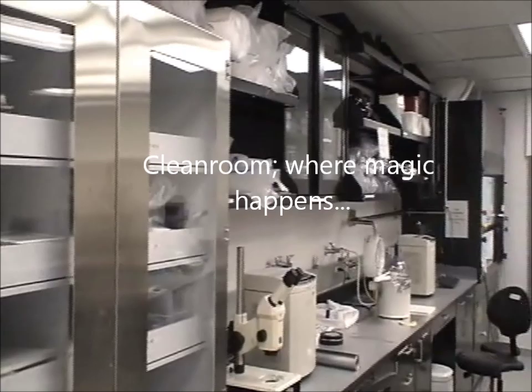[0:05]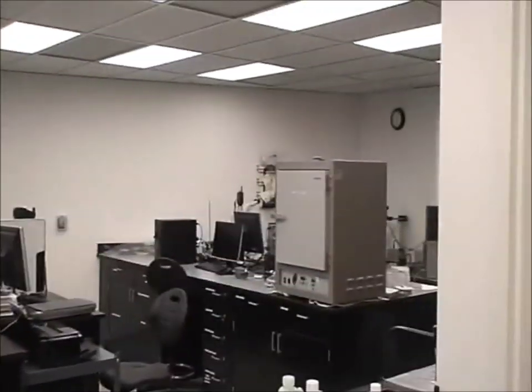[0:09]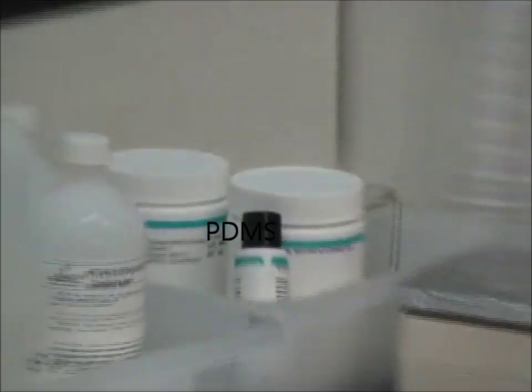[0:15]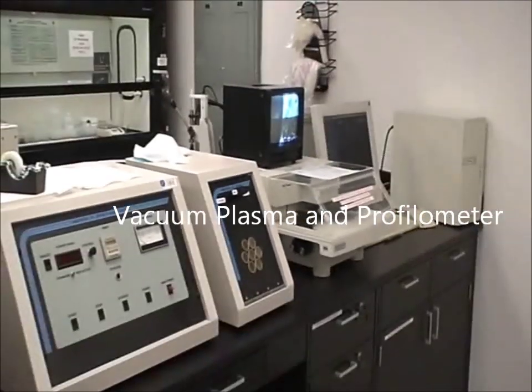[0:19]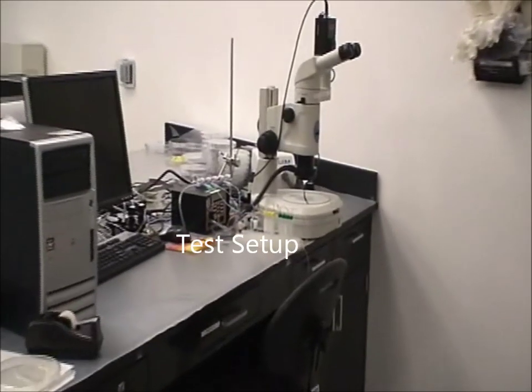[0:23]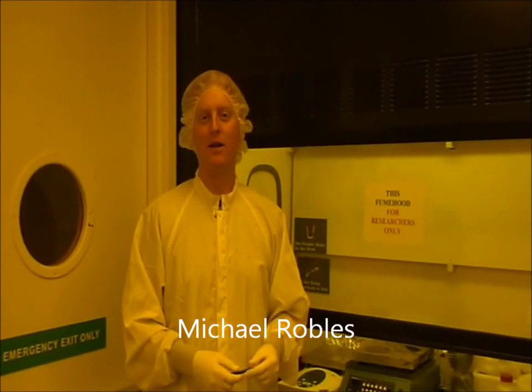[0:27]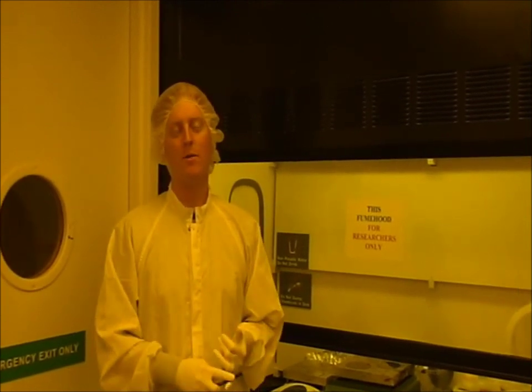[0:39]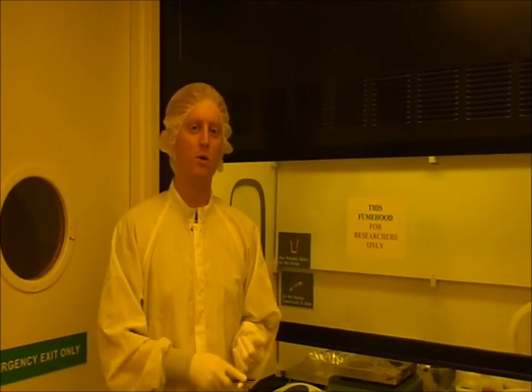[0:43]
using multi-layer soft lithography. The rotary pump chip is one of our simplest devices. The first step in multi-layer soft lithography is mold making. Since the rotary pump chip is a multi-layer device, it requires two molds: one mold for the control layer and one mold for the flow layer.
The control mold is made using negative resist, which has a rectangular cross-section, and the flow mold is made using positive resist, which has a rounded cross-section after reflow. This rounded cross-section ensures complete sealing of the channels of the flow layer during operation of the microfluidic device.
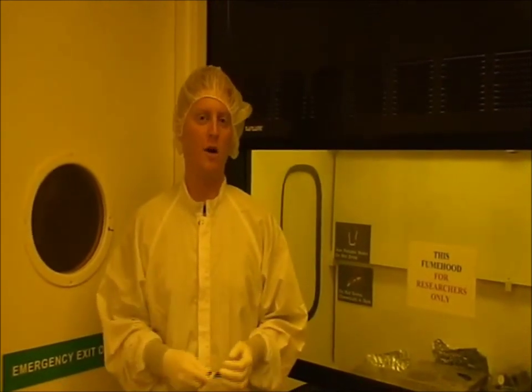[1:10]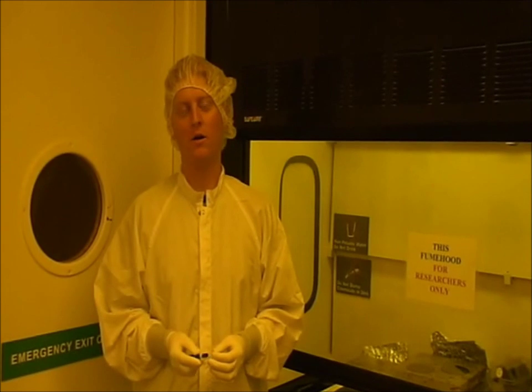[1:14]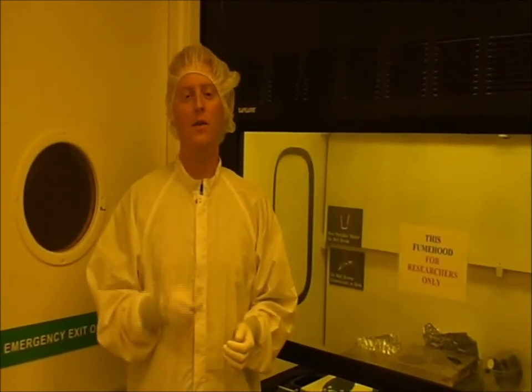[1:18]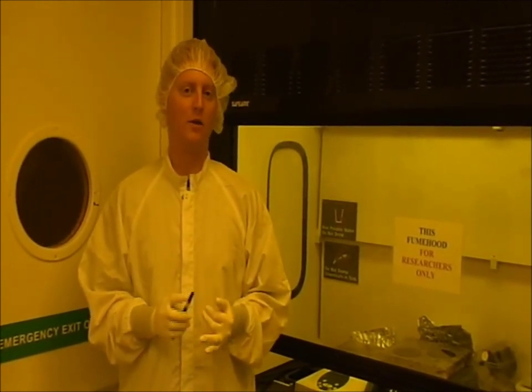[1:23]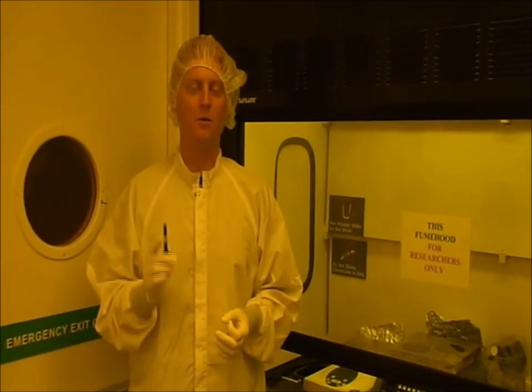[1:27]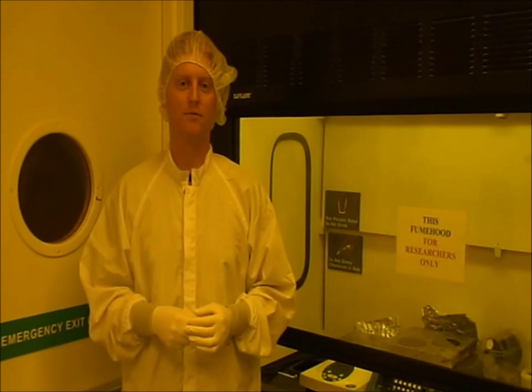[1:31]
The negative resist we typically use is SU8, which can achieve thicknesses of 5 to 150 microns. The positive resist we typically use is SPR, which can achieve thicknesses of 5 to 45 microns. This thickness is determined by the viscosity of the resist and also the spin speed and duration. The thickness of the resist on your mold determines the channel height of your microfluidic device.
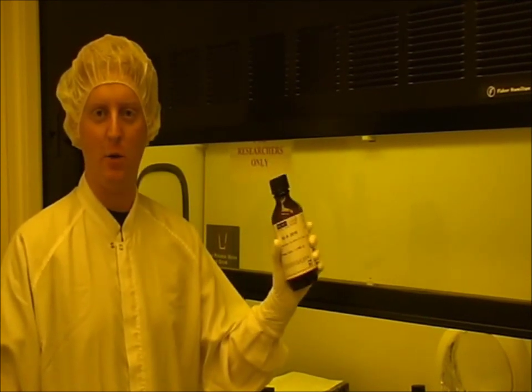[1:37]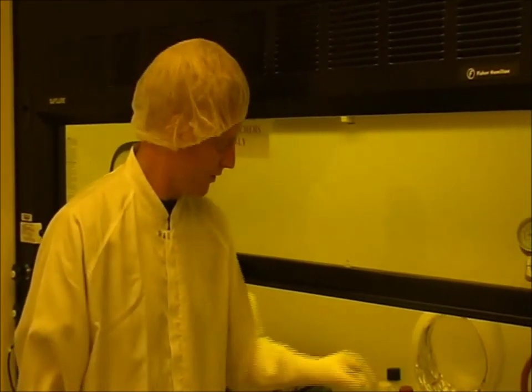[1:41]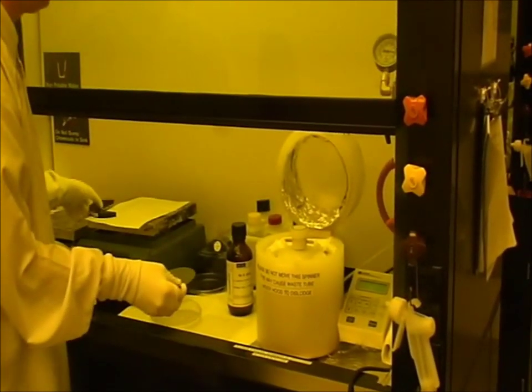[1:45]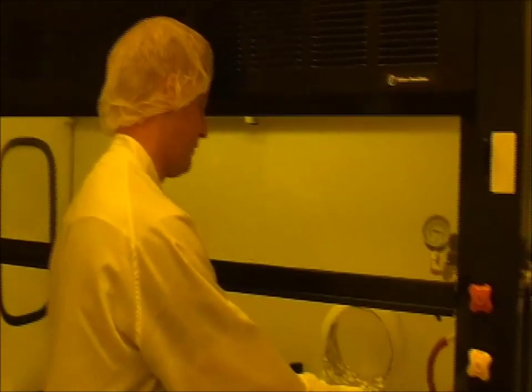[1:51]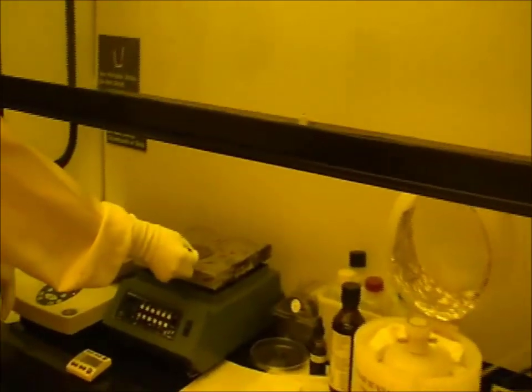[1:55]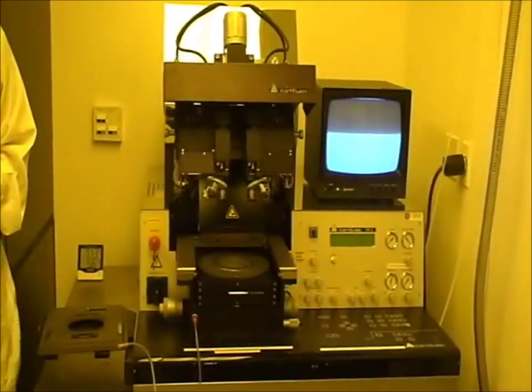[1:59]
At first, I'm going to be making the control mold. We use SU8, which is a negative photoresist. We spin the photoresist onto the wafer, as so. After the spinning is done, we take the wafer and soft bake it in two steps: one step at 65 degrees, and then at 95 degrees, and then we expose it.
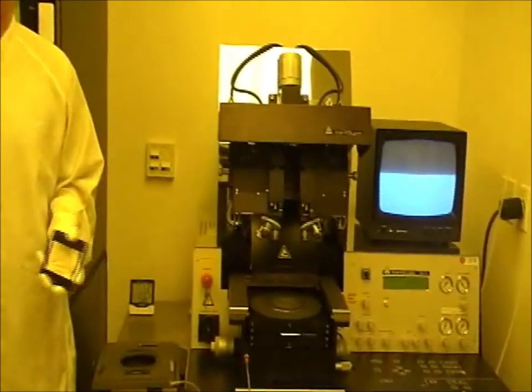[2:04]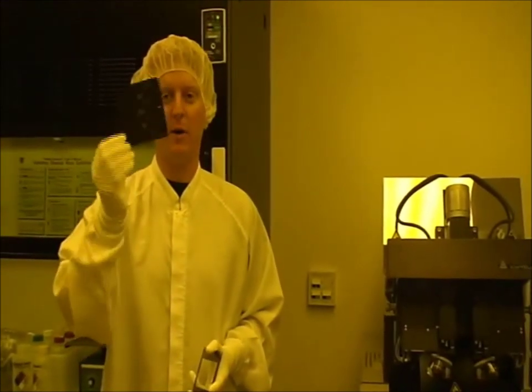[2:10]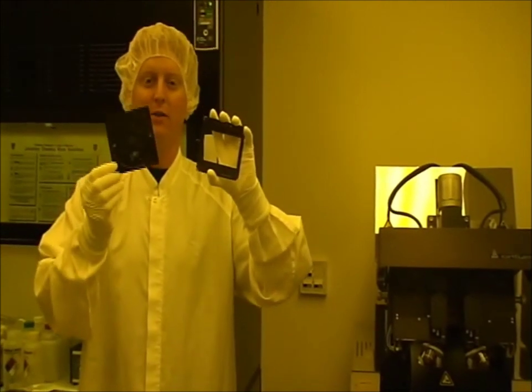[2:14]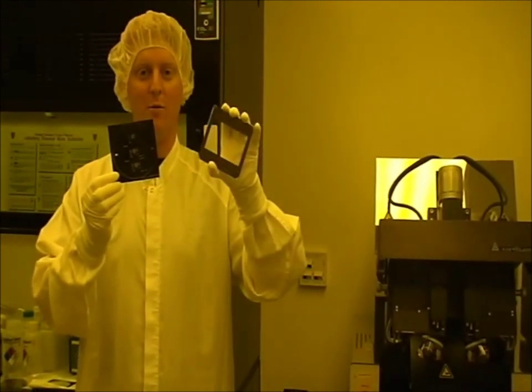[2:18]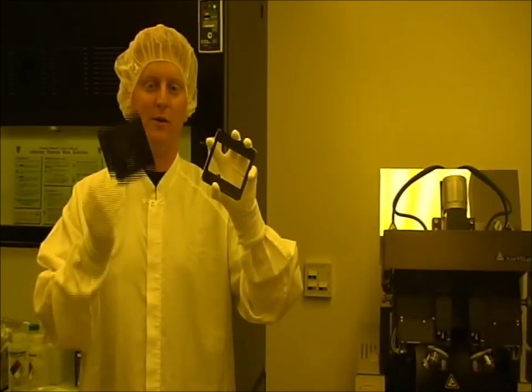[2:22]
We expose the wafer on a Carl Zeiss contact aligner. That shines UV light through a photomask onto the wafer. We use two different types of photomasks, one being a transparency mask, the other being a chrome mask. The transparency mask can achieve resolutions of approximately 10 microns. The chrome mask can achieve resolutions of below 1 micron, but is significantly more expensive than the transparency mask.
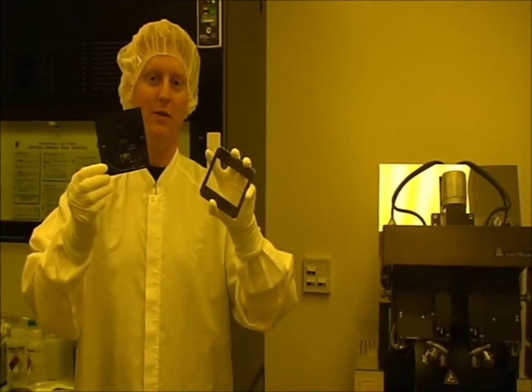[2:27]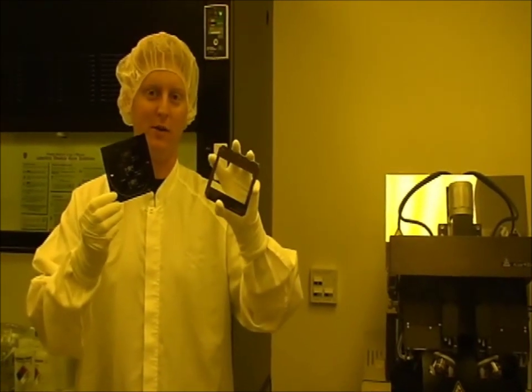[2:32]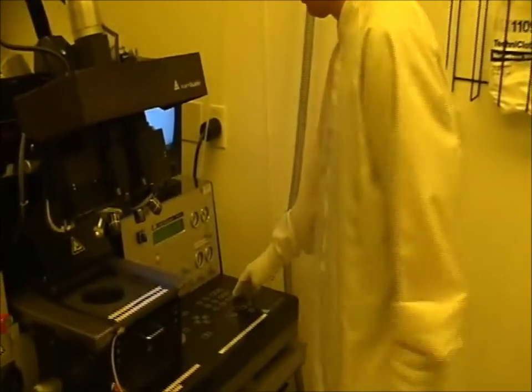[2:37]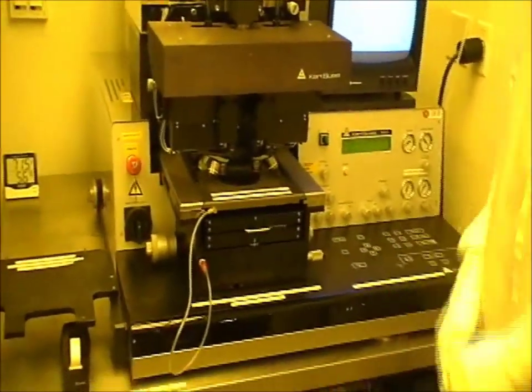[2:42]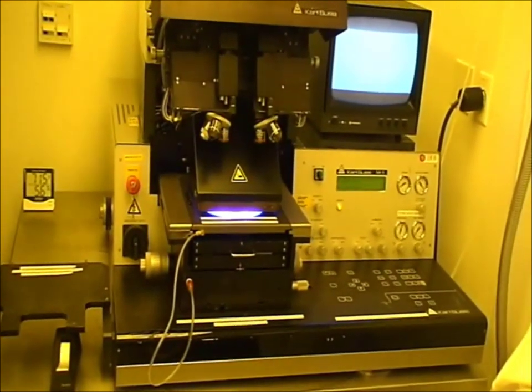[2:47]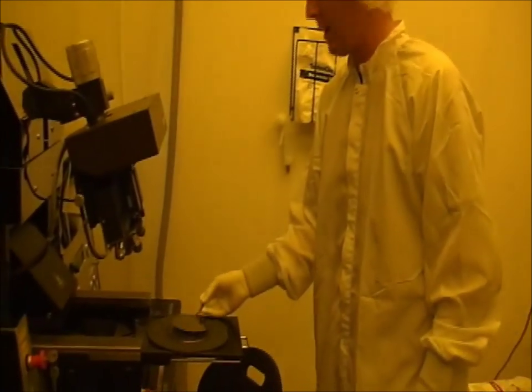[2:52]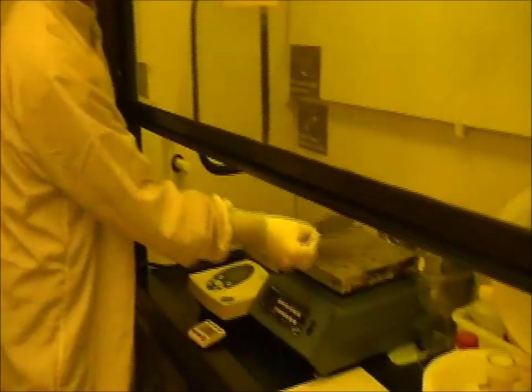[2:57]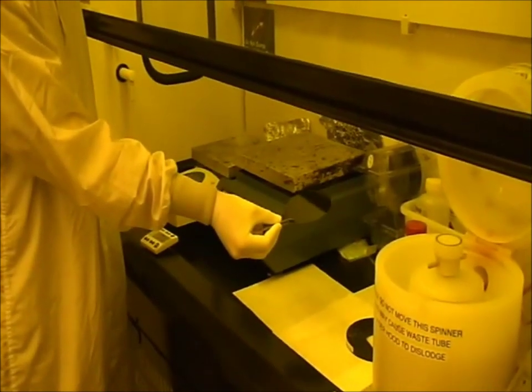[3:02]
This is a negative tone mask for use with negative resist. This is a positive tone mask for use with positive resist. After we load the mask, we load the wafer and expose it. After exposing the wafer, we do a two-step post-exposure bake: one step at 65 degrees, one step at 95 degrees, and then we let the wafer cool before we develop.
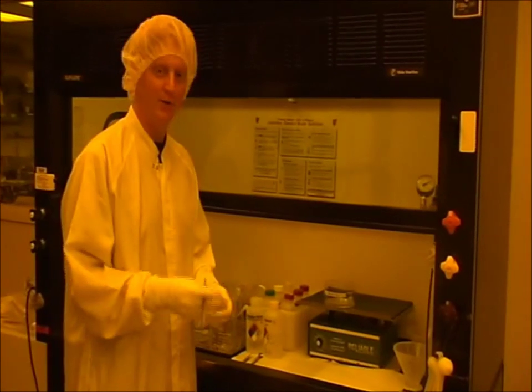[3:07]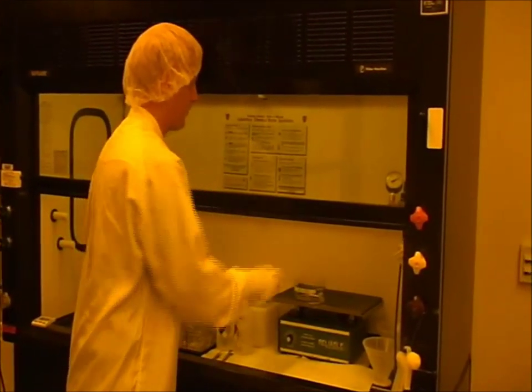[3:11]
After post-exposure bake, we develop the wafer. Since this is negative resist, the developer removes any non-exposed resist, transferring the pattern from the mask onto the wafer. As you can see, after developing, the pattern from the mask is transferred to the wafer. The wafer is now ready for hard baking.
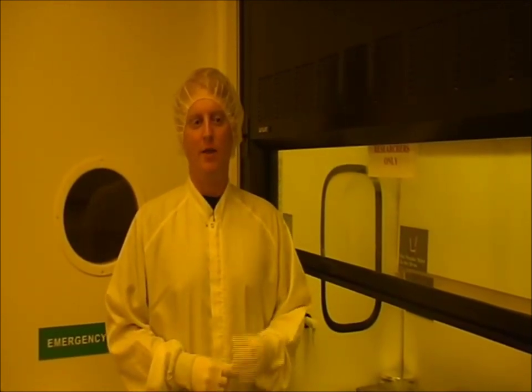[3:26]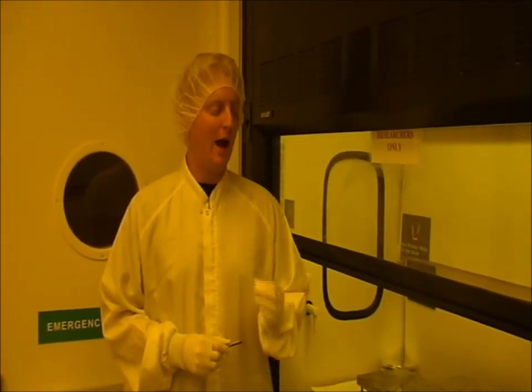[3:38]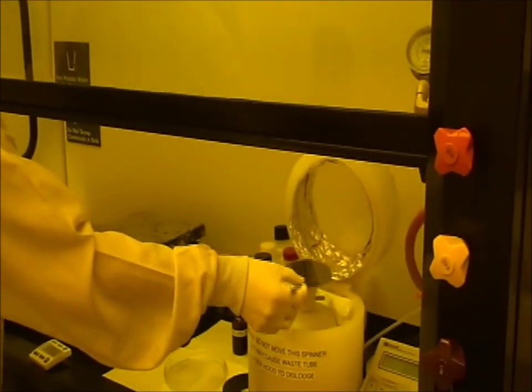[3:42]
For both the flow and control mold, we use 4-inch wafers. There are some differences in the steps for making the flow and the control mold. For the flow mold, before we coat the wafer, we expose it to an adhesion promoter called HMDS. After the adhesion promoter, we coat the wafer. After coating, we do a single step soft bake of the wafer.
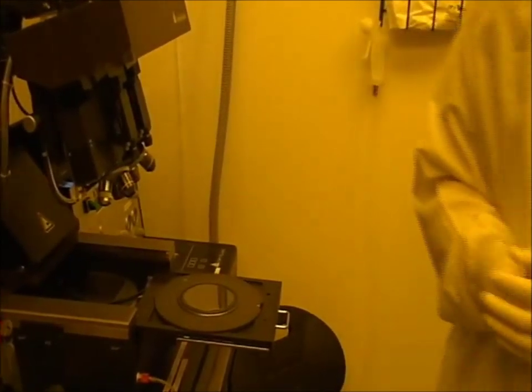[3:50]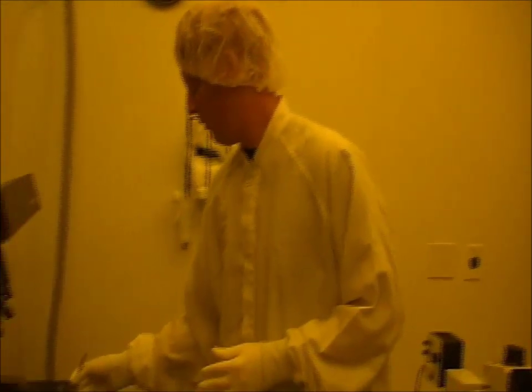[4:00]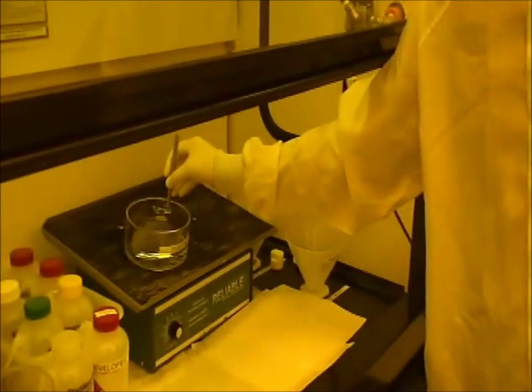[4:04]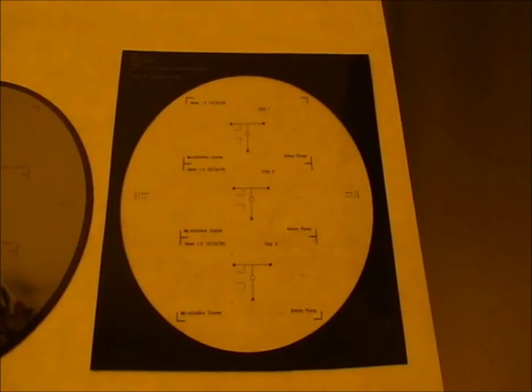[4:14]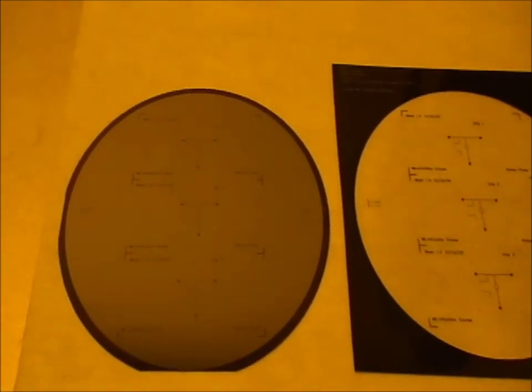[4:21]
After the soft bake, we expose the wafer. And since this is a flow mold, we use positive resist, and for positive resist, we use a positive tone mask. After the exposure, we immediately develop the wafer in positive developer. The positive developer removes any photoresist that has been exposed to UV light. As you can see, after development and cleaning, the pattern from the mask is transferred to the wafer. Now the wafer is ready for reflow and hard baking.
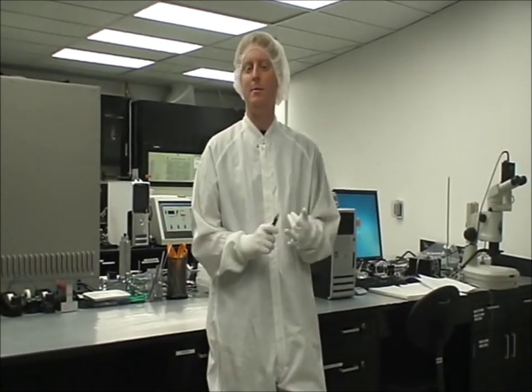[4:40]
Once the molds are hard-baked, we treat them with a silanizing agent. We use either TCS or TMCS. Treatment with the silanizing agent makes the PDMS not stick to the mold and makes it easy to work with. PDMS is a silicone elastomer that consists of two components, an A component and a B component. The manufacturer's recommendation for the mixing ratio is 1 to 10.
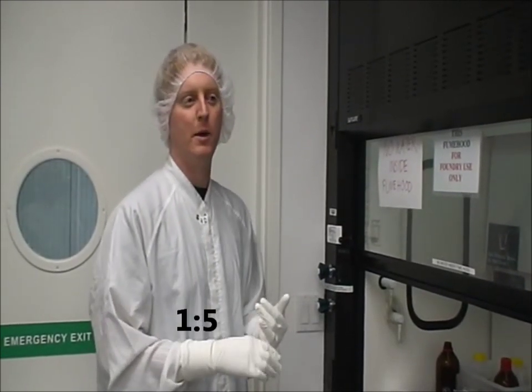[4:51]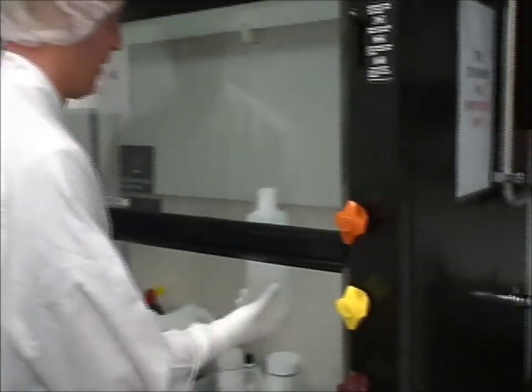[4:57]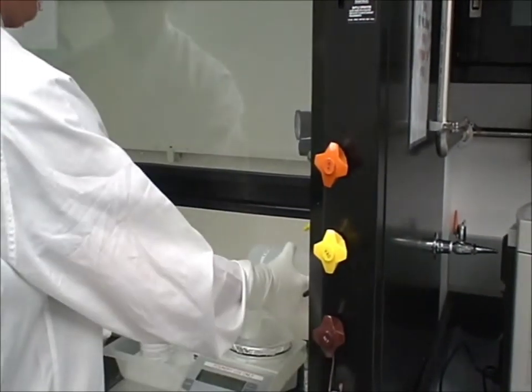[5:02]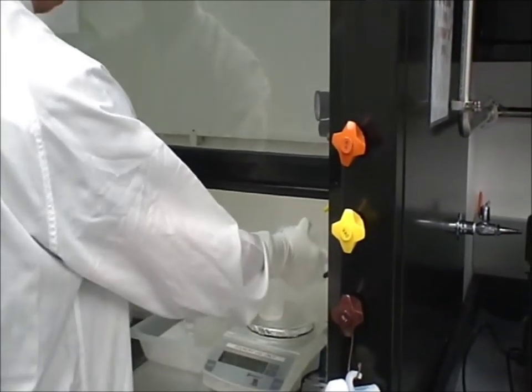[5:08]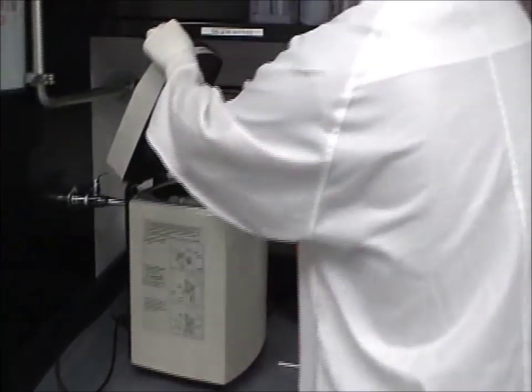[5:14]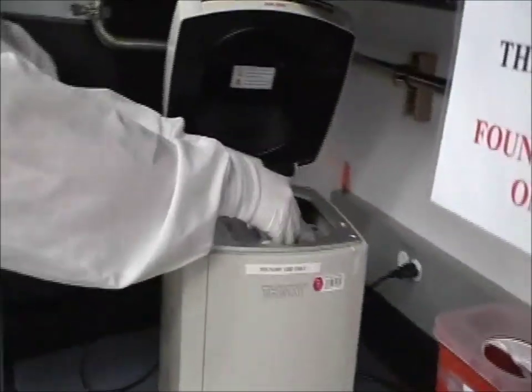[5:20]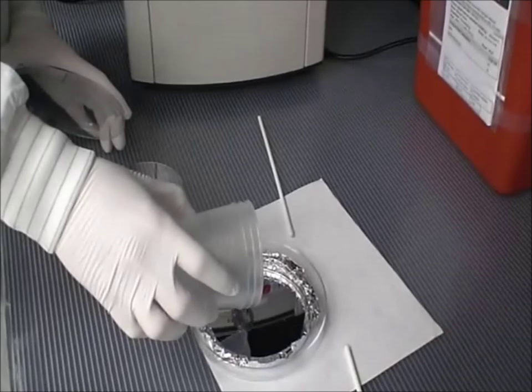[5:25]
First, we'll be making the PDMS for the control layer of the rotary pump. We'll be mixing a 5-to-1 ratio of PDMS. So we have our two components, the A and the B. So we take the mixed PDMS and pour it on our wafer. In this case, this is our control wafer.
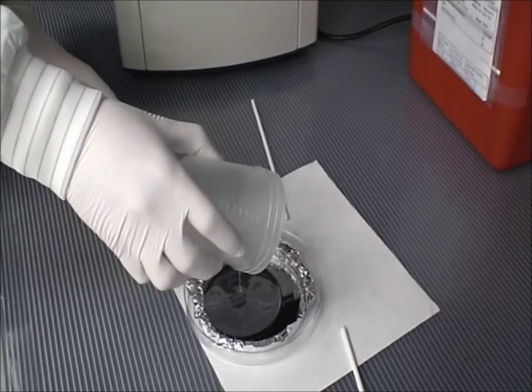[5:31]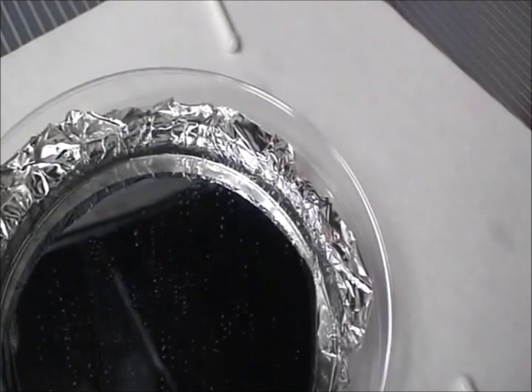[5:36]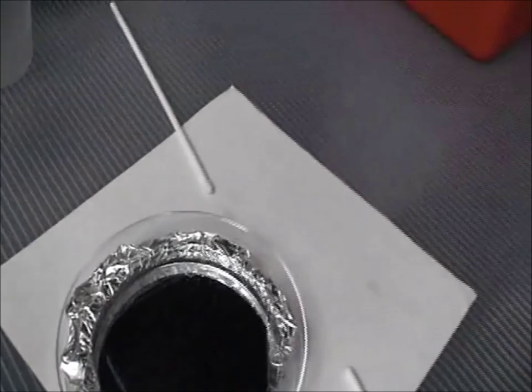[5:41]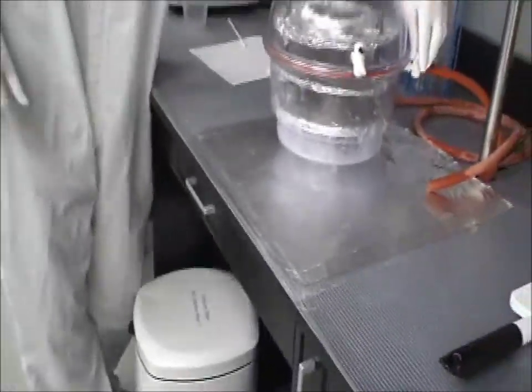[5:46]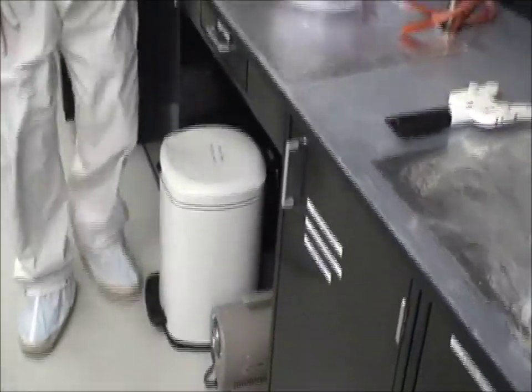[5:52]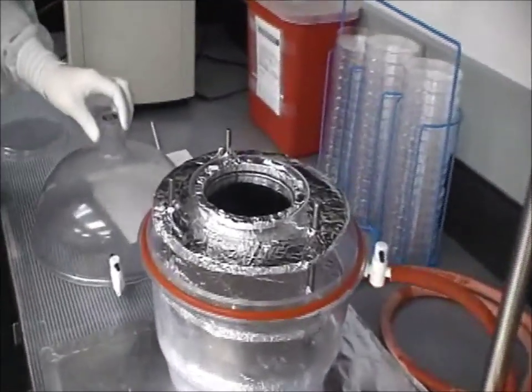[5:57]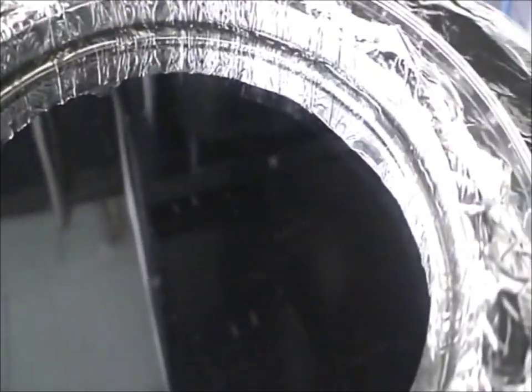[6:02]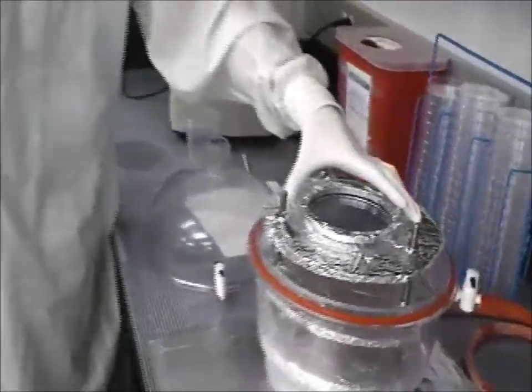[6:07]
As you can see, there are plenty of bubbles in the PDMS. If we were to make the chip right now, the chip would be useless, full of bubbles. So the next step is we degas. The degassing takes about half an hour. Once the bubbles are removed, we bake this layer for about an hour to partially cure it, so then we can thermally bond it to the thin layer.
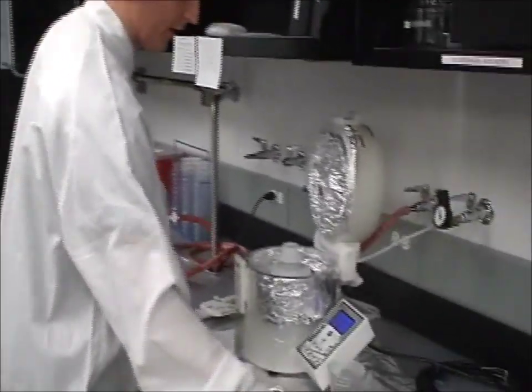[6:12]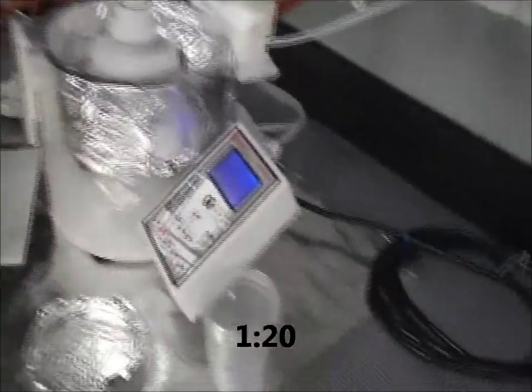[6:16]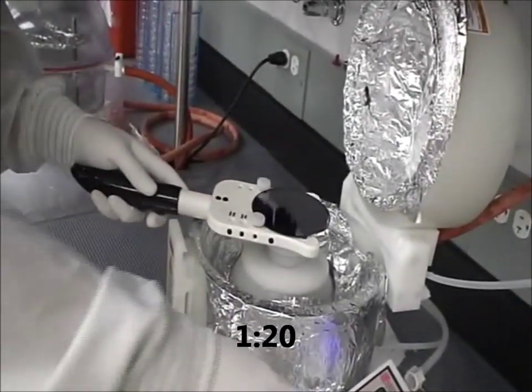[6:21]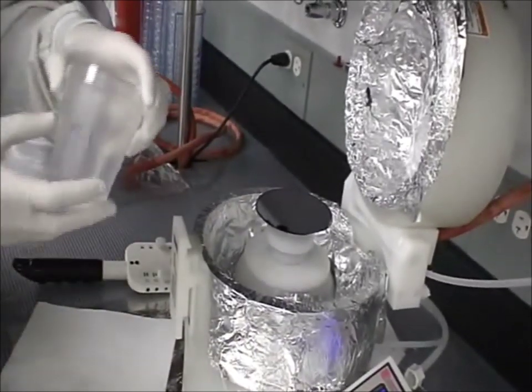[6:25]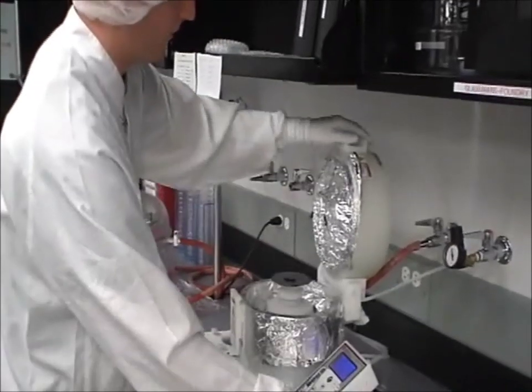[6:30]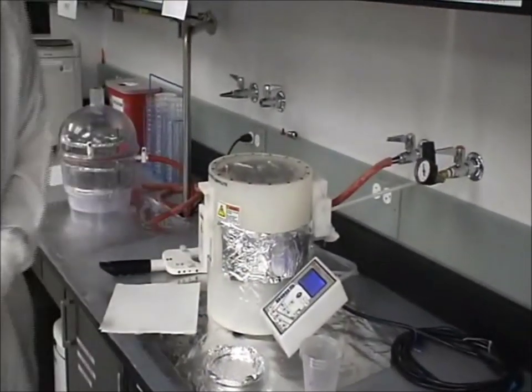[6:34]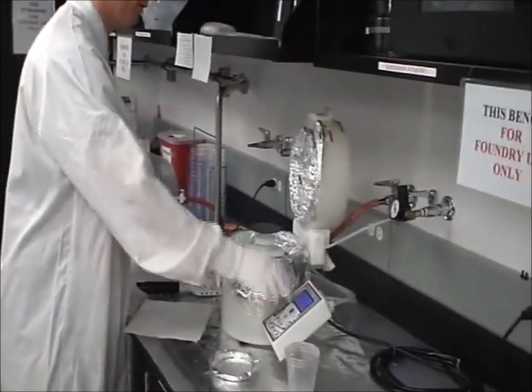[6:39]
For the flow layer for the rotary pump, we do a thin layer of PDMS, and that's of 20:1 ratio. And this is a similar spin coater that we used for the photoresist. And then we spin it. Once the spinning is done, we remove the wafer and bake it for approximately 40 minutes.
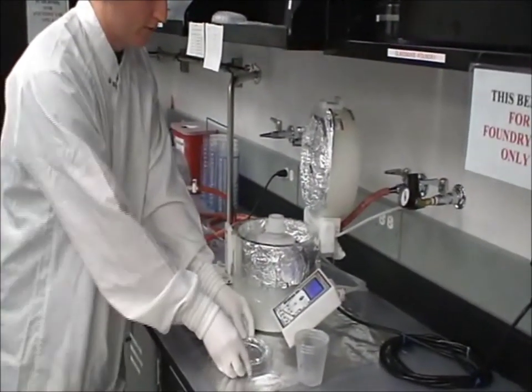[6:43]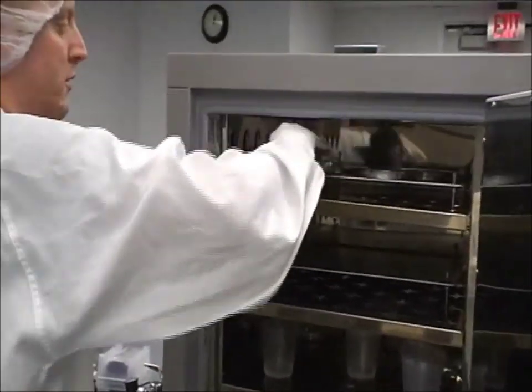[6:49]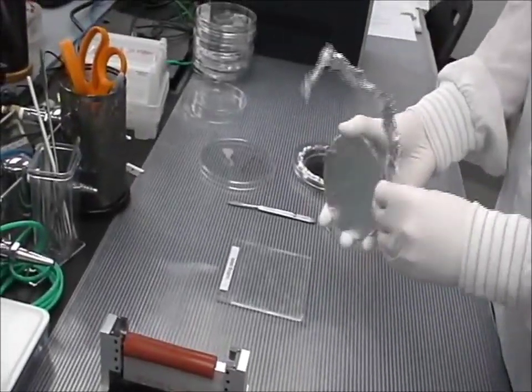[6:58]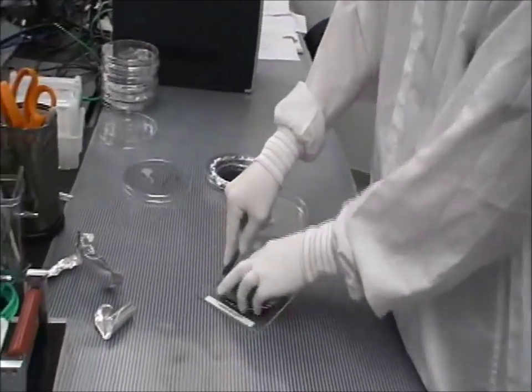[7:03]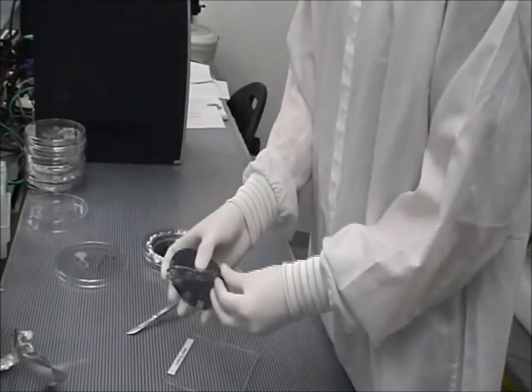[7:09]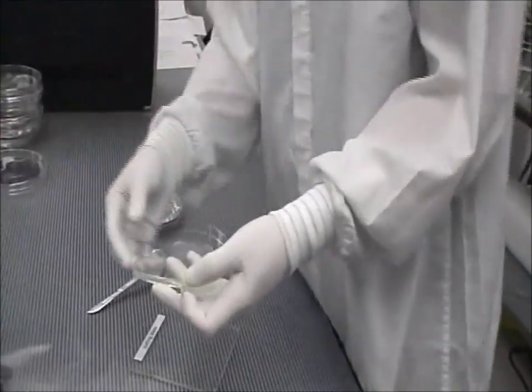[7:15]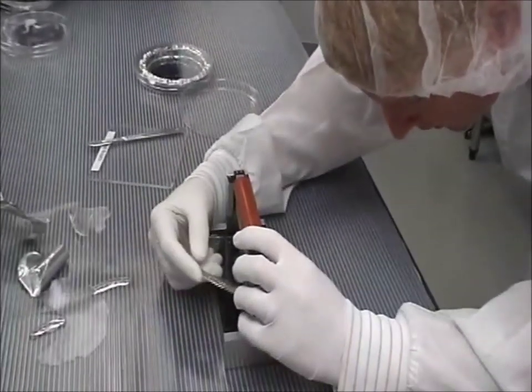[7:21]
Once the baking is done, we remove our two wafers, and then we cut them out. Peel it away from the mold. Then we individually cut out each chip.
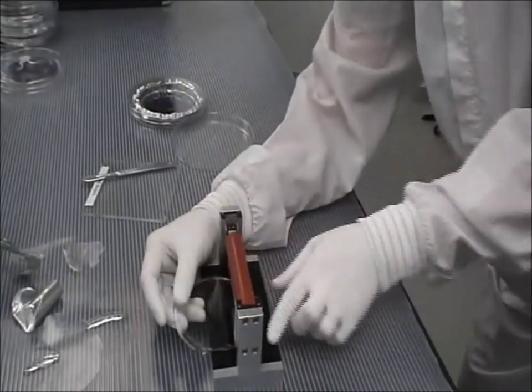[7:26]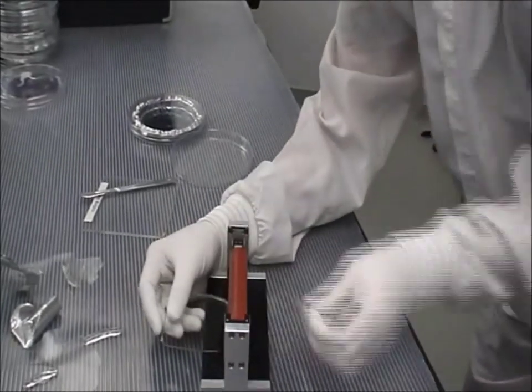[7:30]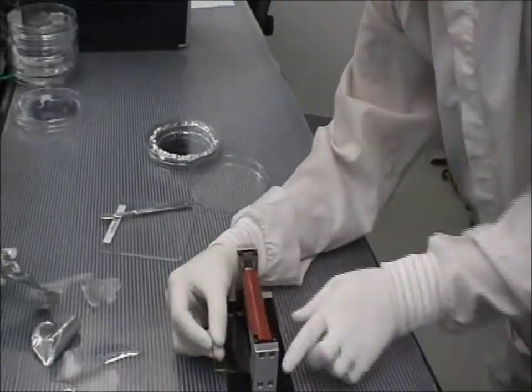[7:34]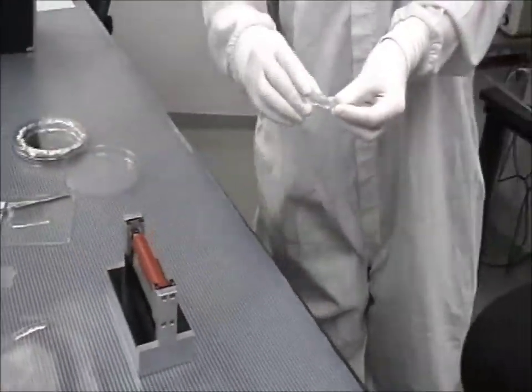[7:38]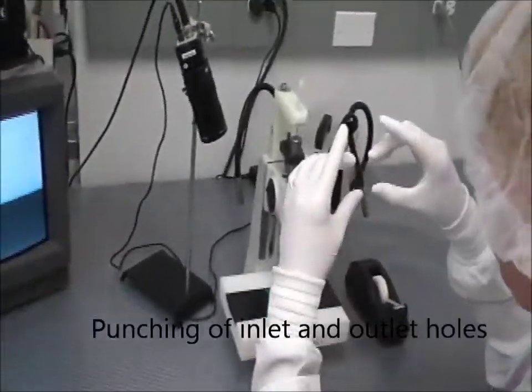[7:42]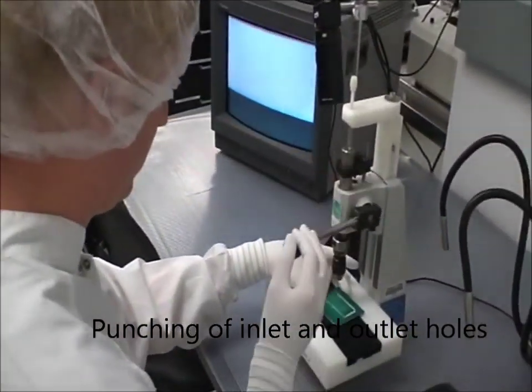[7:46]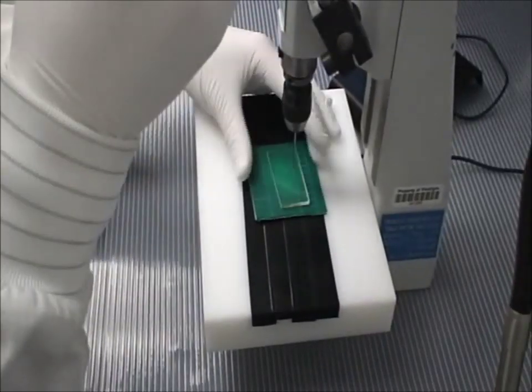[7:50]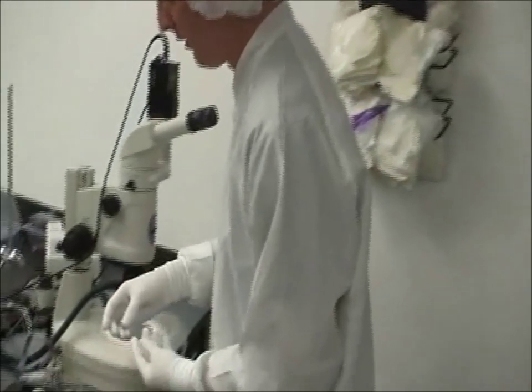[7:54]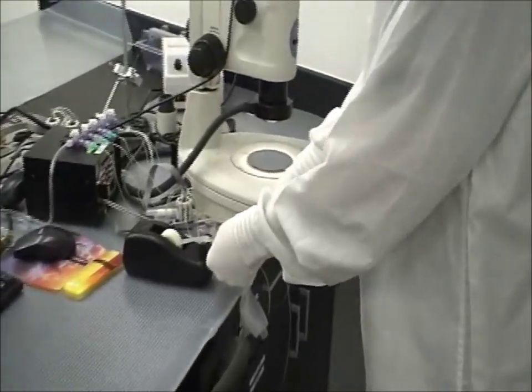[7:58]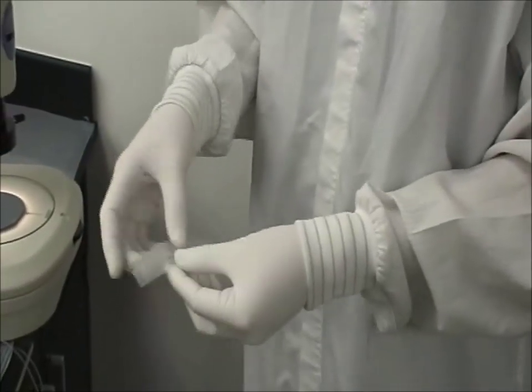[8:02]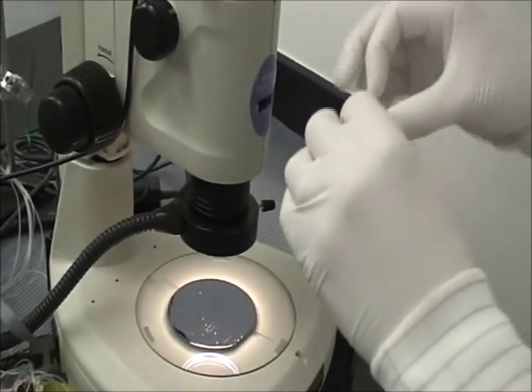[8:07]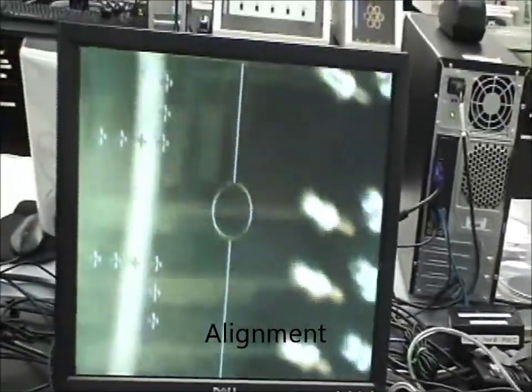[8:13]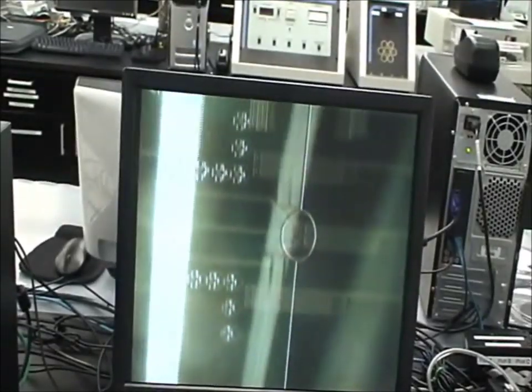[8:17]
Once the holes have been punched, we clean the wafer. To do that, we use masking tape. Masking tape is great for removing any small particles of PDMS, any dust that may have gotten on the wafer. You place your thick layer on top of your thin layer. Try and line up your alignment marks.
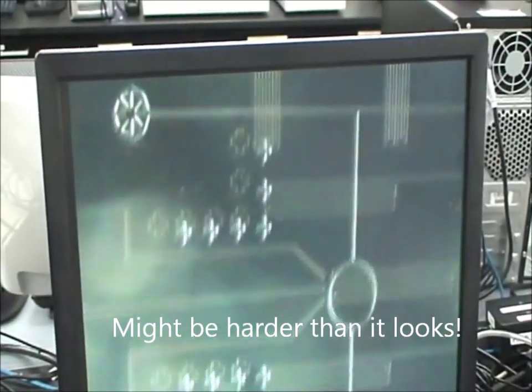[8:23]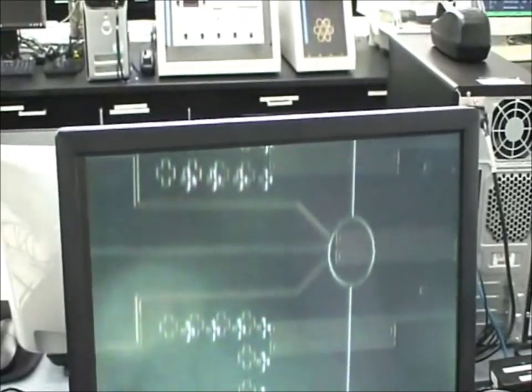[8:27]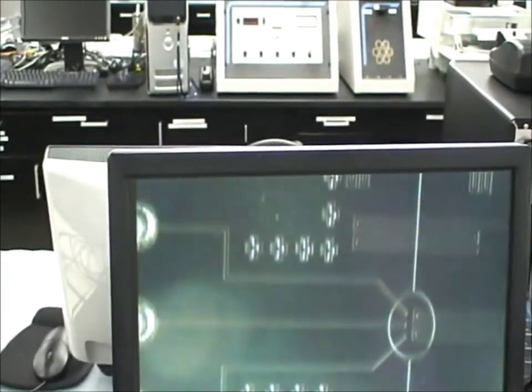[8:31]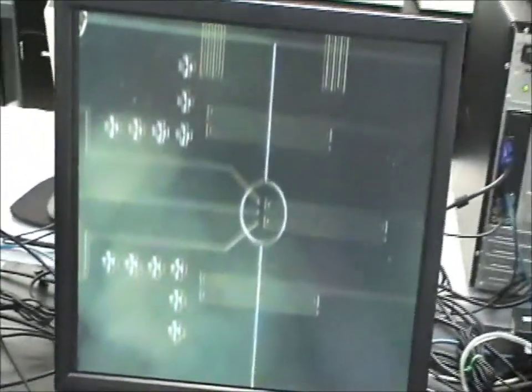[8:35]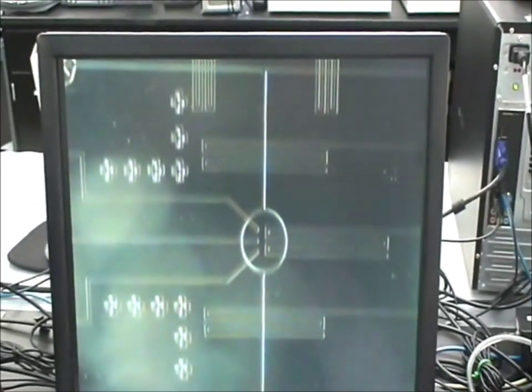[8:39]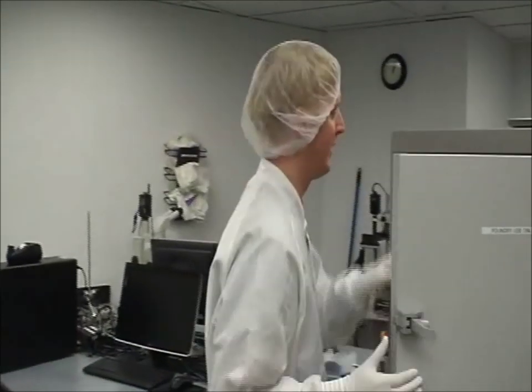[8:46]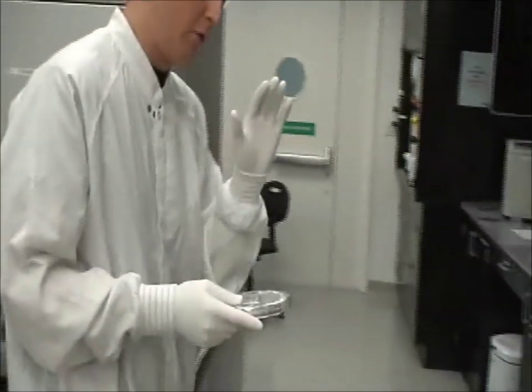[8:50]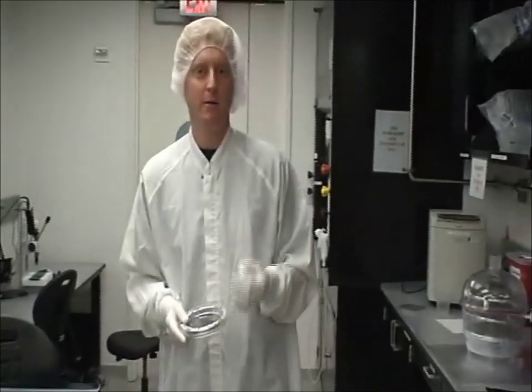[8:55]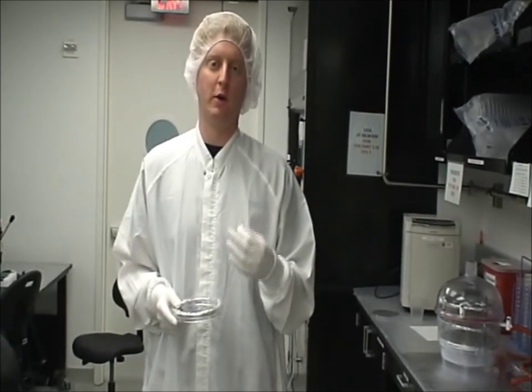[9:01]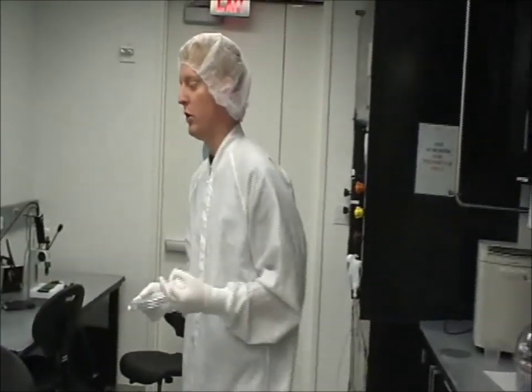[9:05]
After we are aligned, we then bake the chip at 80 degrees for another hour. After incubating for an hour, we take the chip out. At this point, the two layers should be bonded together because of the thermal bonding from the two different ratios. The crosslinker in the 5:1 ratio is diffusing over the interface between the two layers into the 20:1 ratio. So we should have a single piece of PDMS.
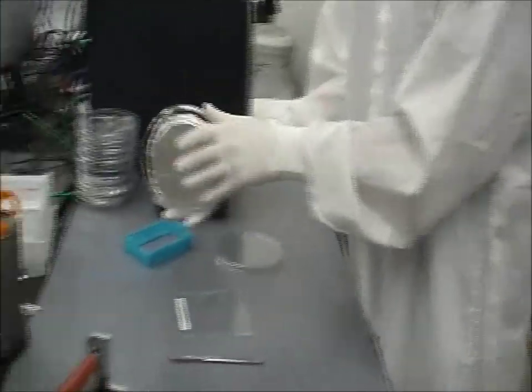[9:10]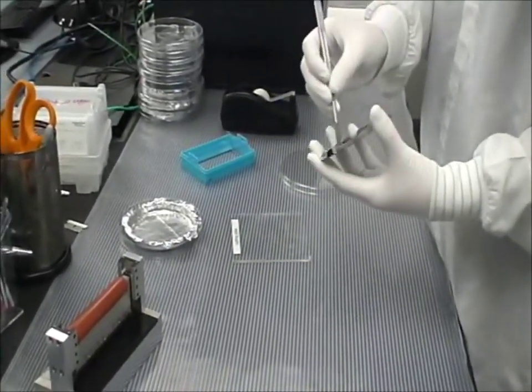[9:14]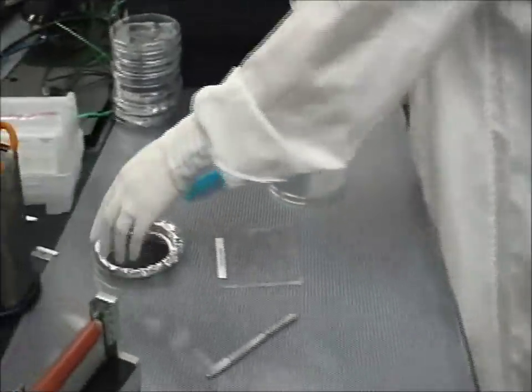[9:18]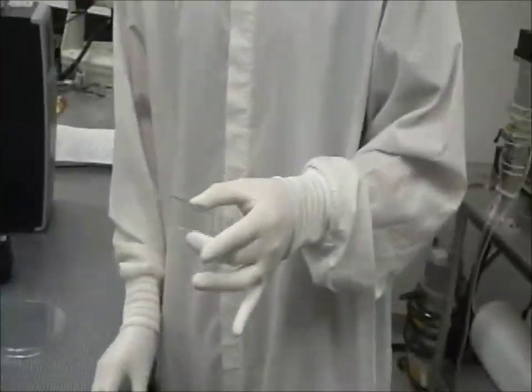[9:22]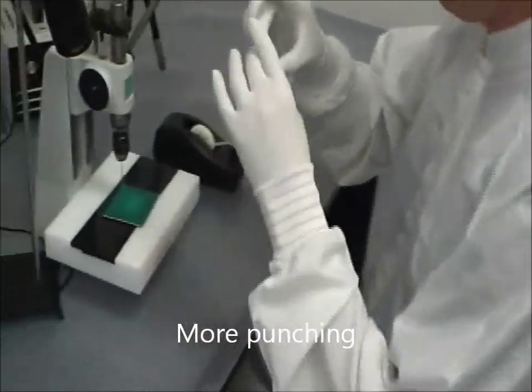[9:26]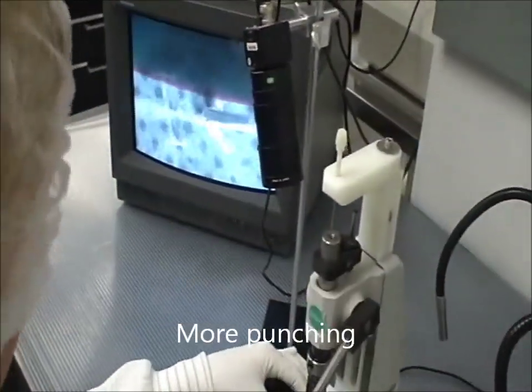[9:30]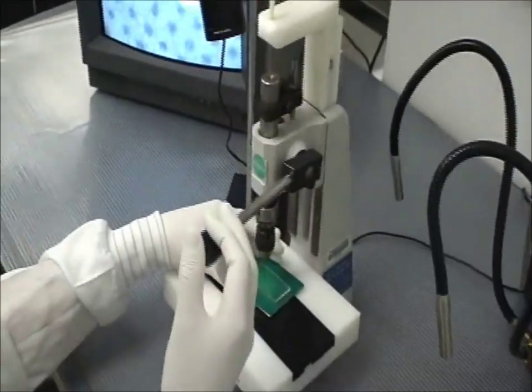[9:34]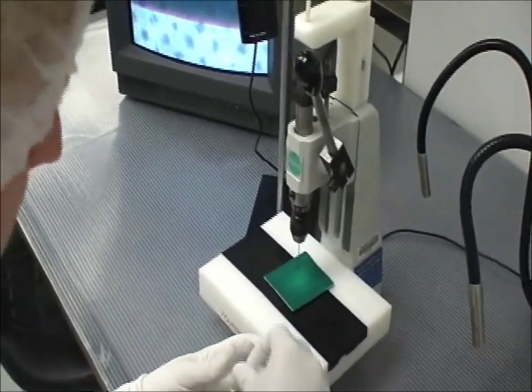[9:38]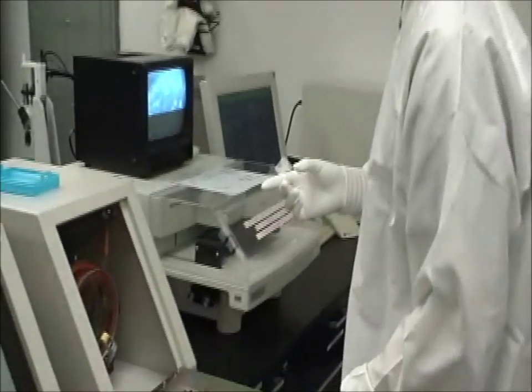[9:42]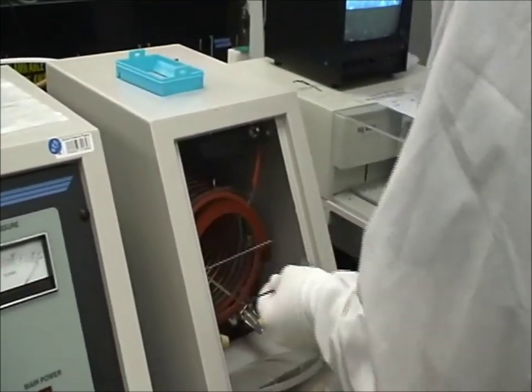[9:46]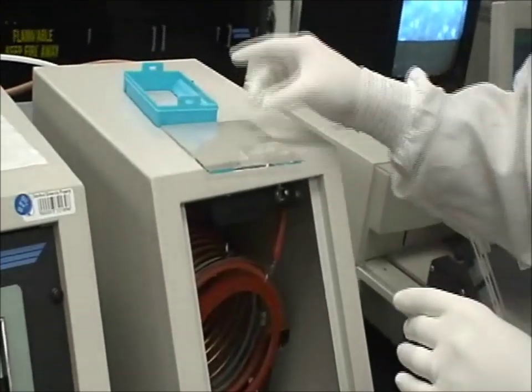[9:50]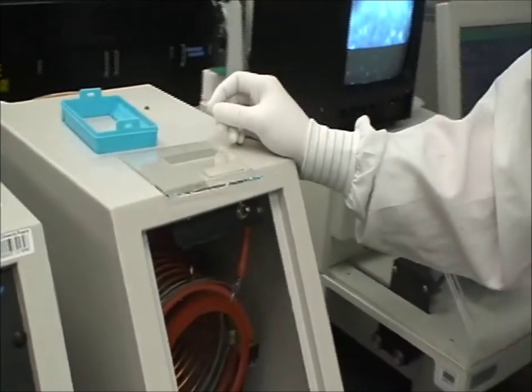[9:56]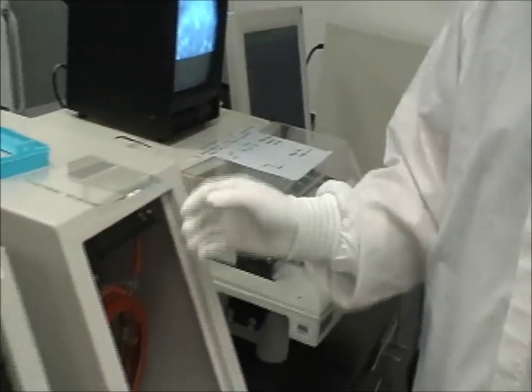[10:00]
Once we punch all the holes, we put the chip and a clean glass slide into an oxygen plasma system. We use this to bond the PDMS to the glass slide. What this does is it modifies the surface of both the PDMS and the glass slide so we can bond them together. It's a very strong permanent bond.
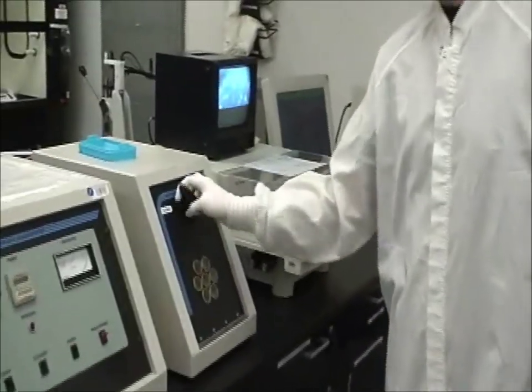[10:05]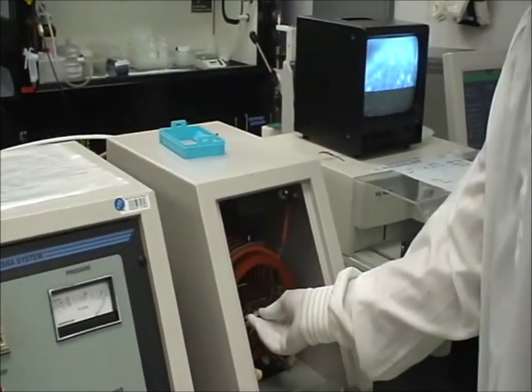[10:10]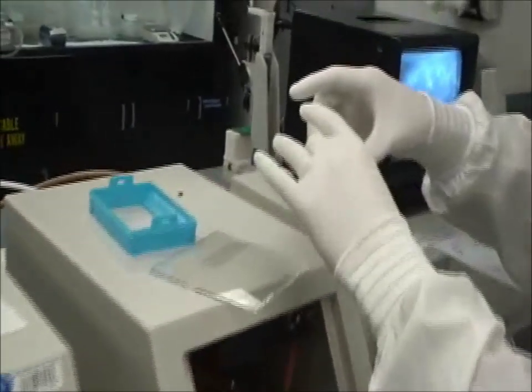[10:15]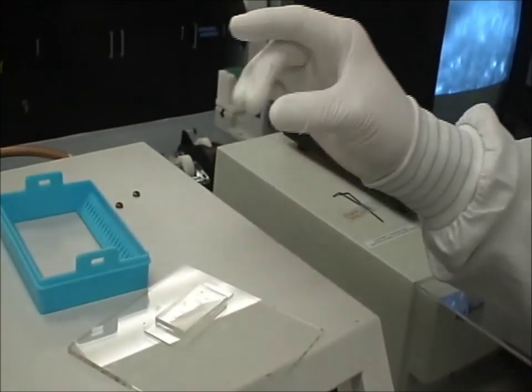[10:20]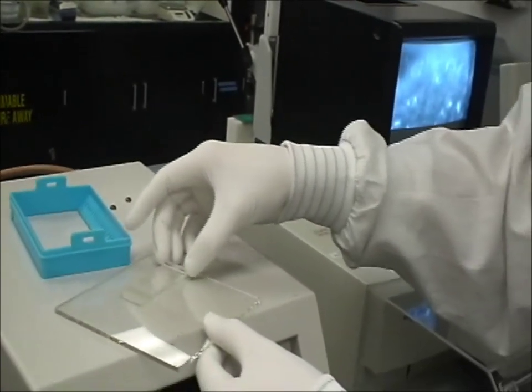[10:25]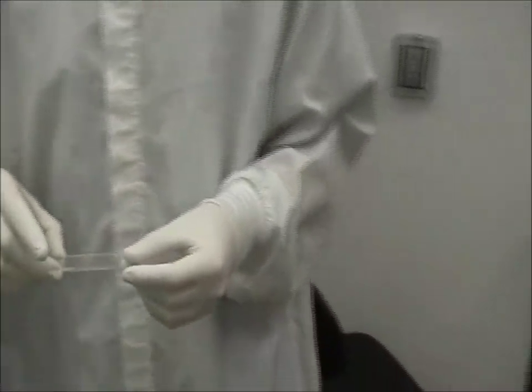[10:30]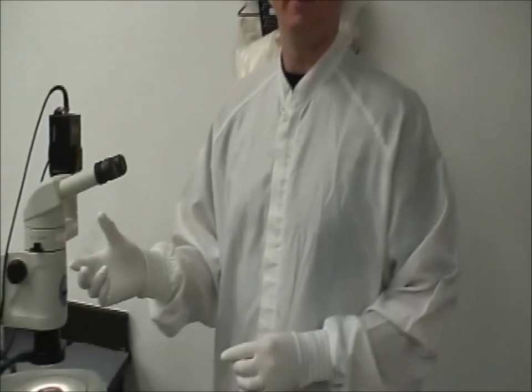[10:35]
Once this process is done, we take out the chip and the slide and place the chip on our substrate, and it bonds. Once we place it on, we put this in the oven for another 10-15 minutes just to ensure we have a good bond. After plasma bonding, we generally wait overnight to test the chip. You can see this is a very strong bond. I can't peel it off with my fingers.
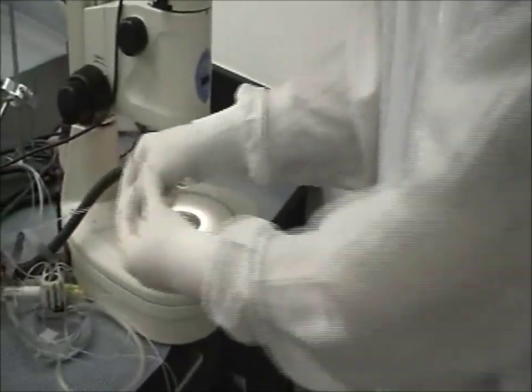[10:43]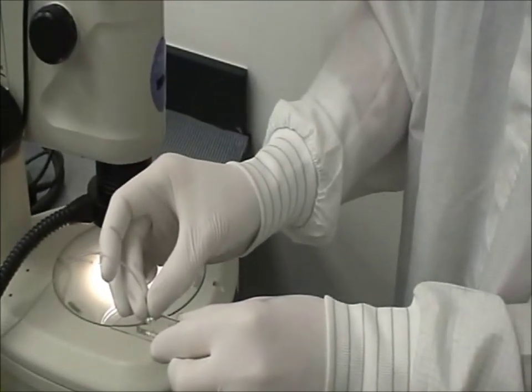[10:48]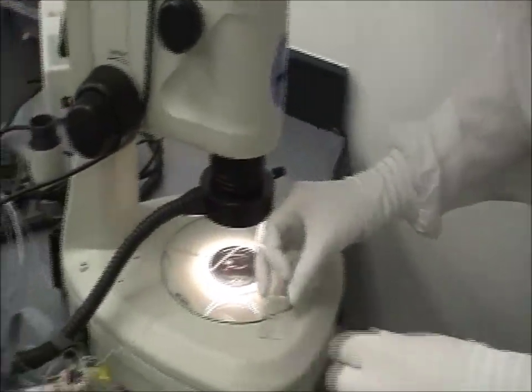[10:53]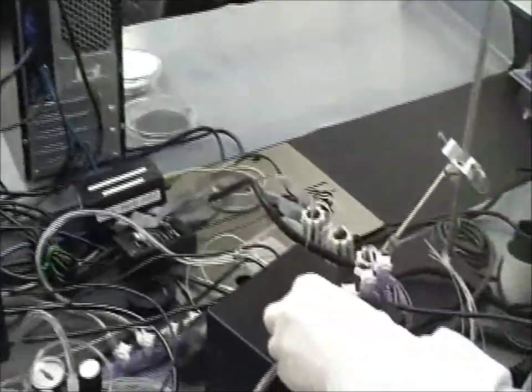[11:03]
To test the chip, we place a 20-gauge needle into the hole, connected to Tygon tubing, connected to an air source. As you can see on the screen, this is the rotary pump. And as I turn on the air to turn the valve on, that's closed, that's open. Generally, these work at around 10 psi.
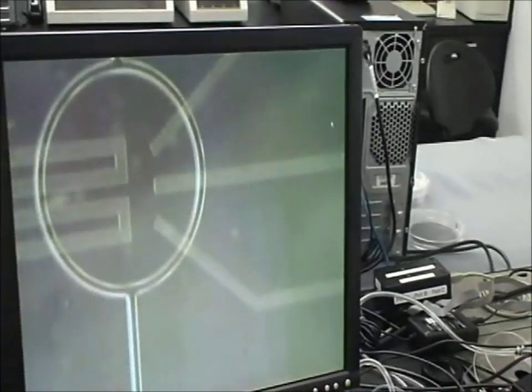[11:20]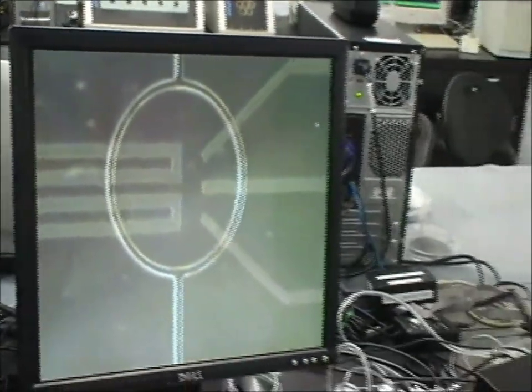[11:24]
This concludes our video on the production of a microfluidic device, from the mold making to the chip making.